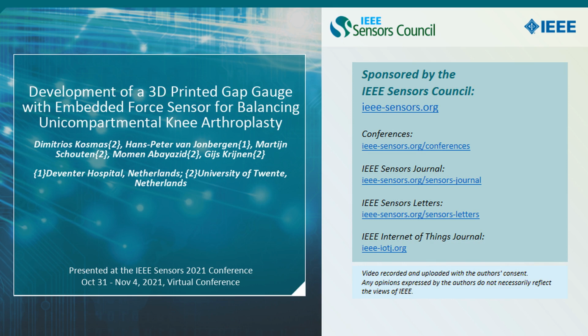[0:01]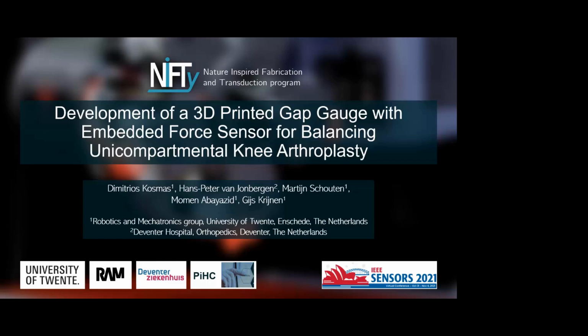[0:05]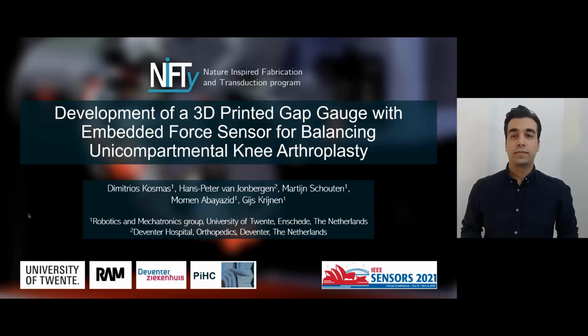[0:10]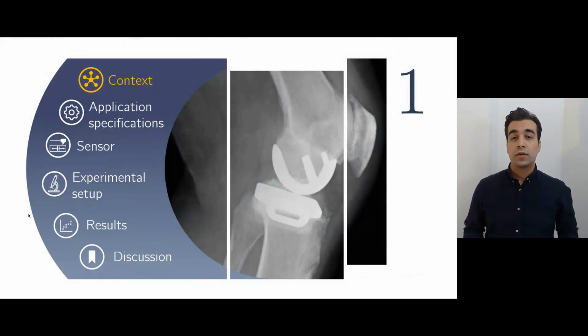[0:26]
My name is Dimitrios Kosmas, and on behalf of the Robotics and Mechatronics Group of the University of Twente, I will be sharing our work on the development of a 3D printed capacitive force sensor aimed to assist in a partial knee replacement surgery. First, we will have a brief introduction to the project.
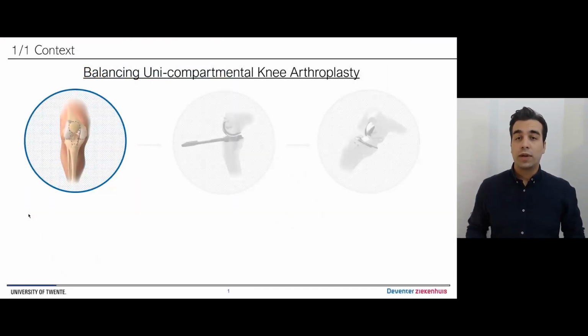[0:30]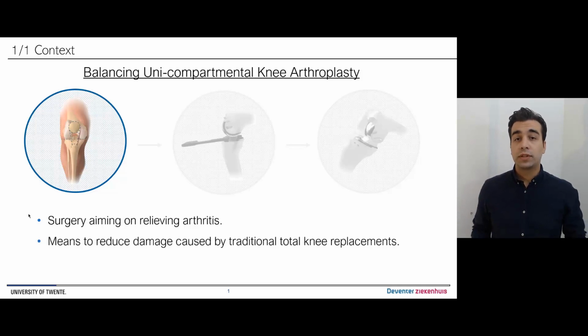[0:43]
The topic of balancing unicompartmental knee arthroplasty focuses on relieving symptoms of knee-related arthritis as an alternative to the more traditional total knee replacement. When applicable, the partial knee replacement incorporates smaller implants, which reduces the amount of bone required to be removed, subsequently minimizing the overall damage that is induced.
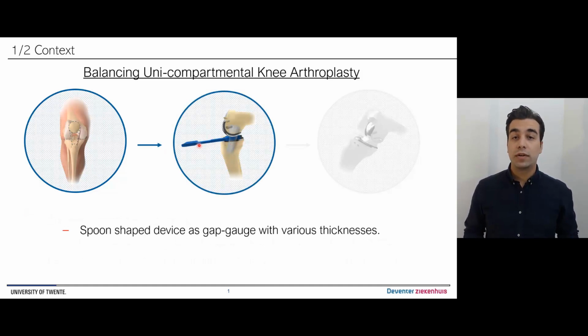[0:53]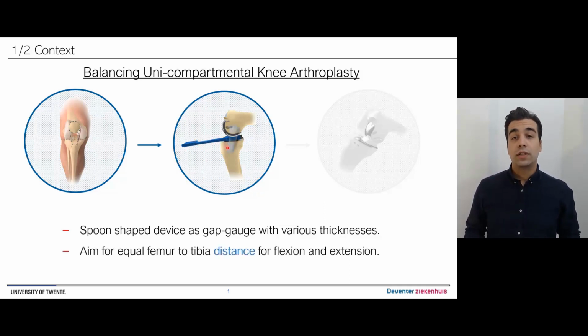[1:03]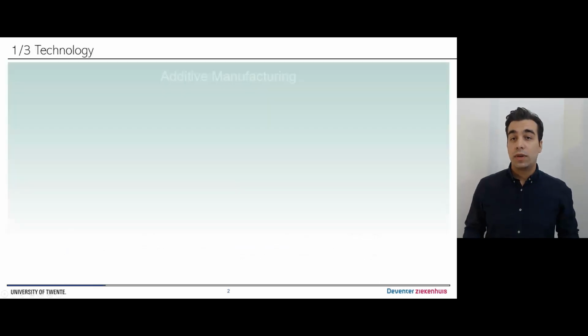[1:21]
During the surgery, the orthopedist makes use of a spoon-shaped device, referred to as the gap gauge. These gauges come in various thicknesses, as a means to address the different knee sizes. The goal during this step of the surgery is to assess the distance between the tibia and the femur bones, such that the gap is equivalent in positions flexion and extension of the unloaded knee. Equivalent distance guarantees the proper function of the polypropylene bearing implant that is located between the metallic parts of the final prosthesis.
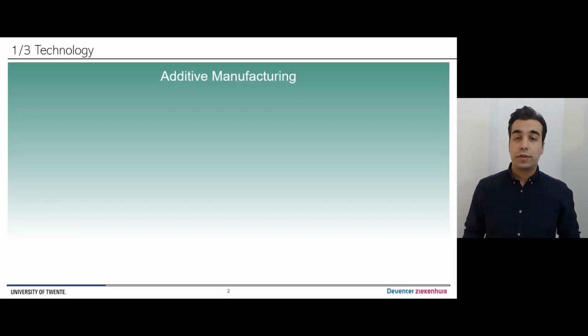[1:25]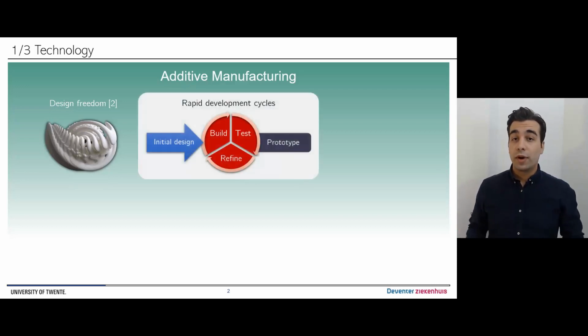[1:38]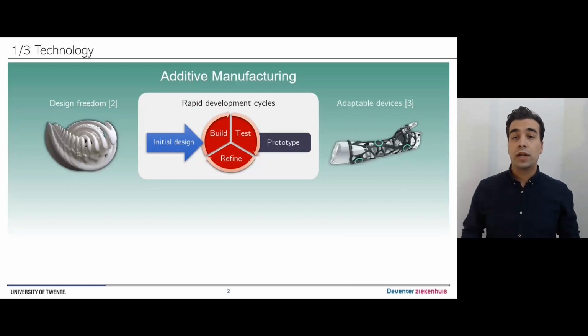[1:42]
In this work, we make use of additive manufacturing as the fabrication technology. Additive manufacturing, or 3D printing, is known for a number of key advantages, like design freedom, which enables the fabrication of complex shapes, as the one shown in this figure, representing a sculptor's recreation of a spike fossil, rapid development cycles, and, amongst others, the possibility to realize geometries with personalized features.
In particular, out of several 3D printing fabrication technologies, we make use of fused filament fabrication, which is one of the most common and accessible methods, where molten thermoplastic is pushed through a small diameter nozzle to form objects layer by layer.
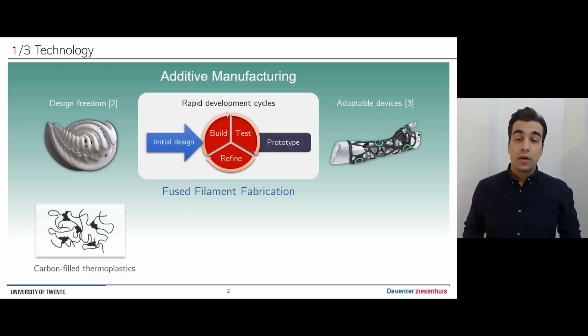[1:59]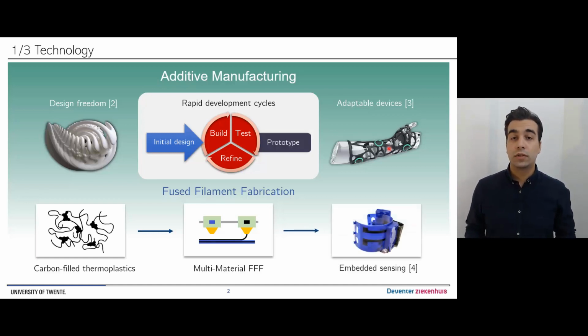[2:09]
When these thermoplastics are infused with carbon, they can exhibit conductive behavior, and combined with multi-material techniques, sensing can be integrated into almost any geometrical structure, like the one that we see in this figure, showing a 3D printed EMG armband, which was developed within our group.
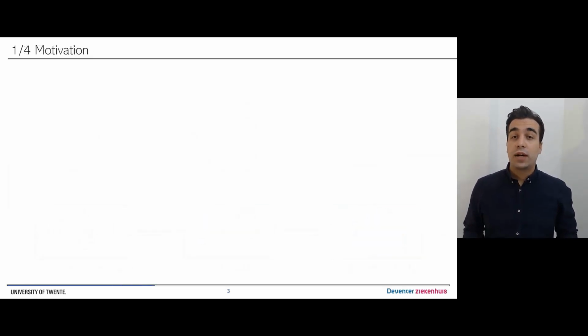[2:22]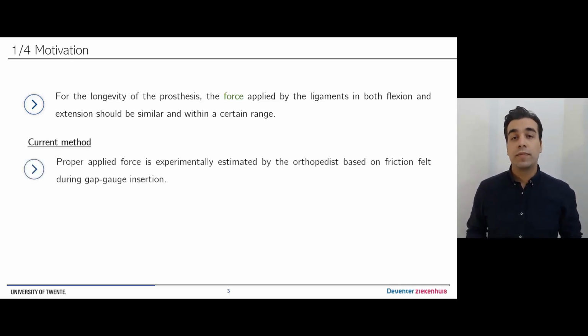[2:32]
The motivation behind this project is the hypothesis that for the longevity of the prosthesis, the applied force by the ligaments in both flexion and extension of the knee should be similar and within a certain range. Currently, this force is experimentally estimated by the surgeon based either on the felt friction during the gap gauge insertion or based on the reaction force when attempting to raise the gap gauge while in place.
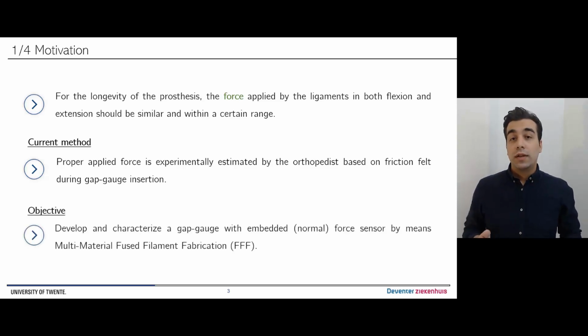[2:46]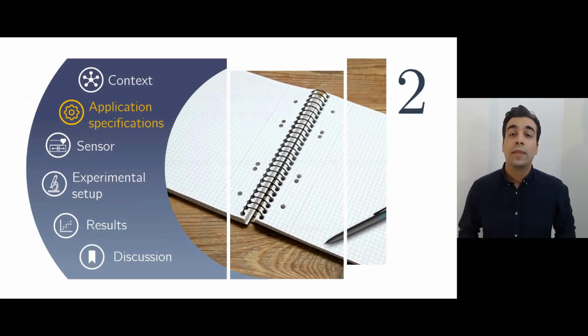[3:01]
Therefore, the objective of this work is to develop and characterize a gap gauge with embedded sensing in order to quantify the normal force applied by the ligaments, and we will do that by using multi-material fused filament fabrication technology. With the context introduced, we first have to define the application requirements.
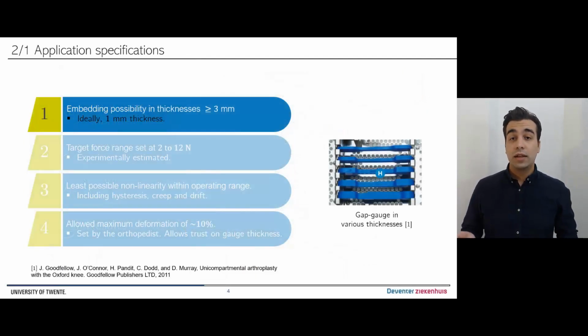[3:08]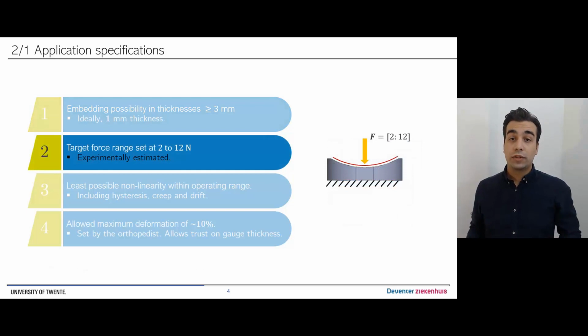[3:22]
As discussed, the gap gauges come in various thicknesses. With a proof of concept prototype in mind, we focus on thickness of 3 mm and above, as means to ease the fabrication process. Second, the target force range to be sensed is set from 2 to 12 newtons, and this is experimentally validated with the help of the surgeon and an artificial knee setup fitted with an off-the-shelf load cell.
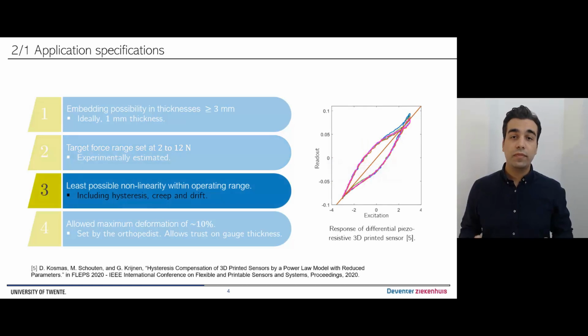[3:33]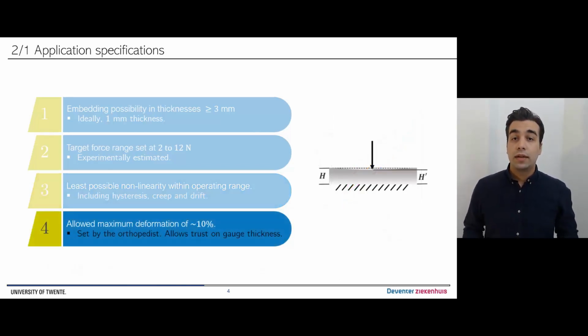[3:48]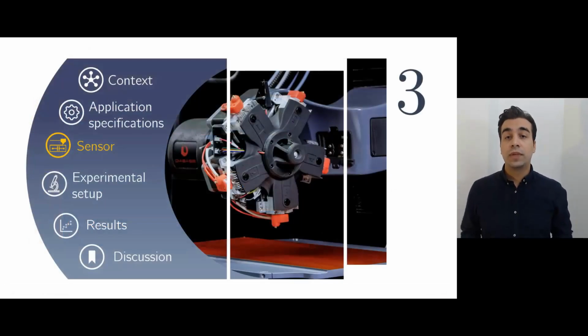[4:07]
Third, given the non-linearities exhibited by filament-based 3D printed sensors, we aim for a sensing principle and configuration that could eliminate most of the undesired effects, such as hysteresis, creep, and drift. And fourth and last, by integrating sensing into the spoon, we consequently allow a certain degree of deformation, such that a signal can be produced. In order to maintain trust on the gap gauge's thickness rating, and after dealing with the orthopedist, a maximum of 10% deformation is set as the allowed limit.
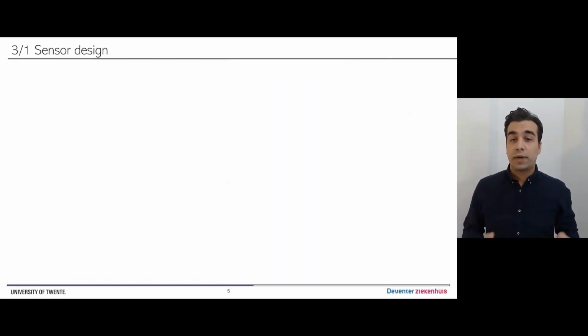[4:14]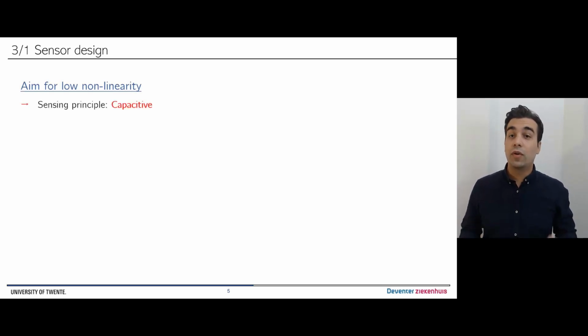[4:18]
Next, the sensor design and fabrication will be discussed. For the sensing principle, a capacitive approach is chosen in this case. Often, a piezoresistive approach is also suitable, but from the literature it is shown that filament-based piezoresistive sensors exhibit highly nonlinear response, which would violate the set specifications.
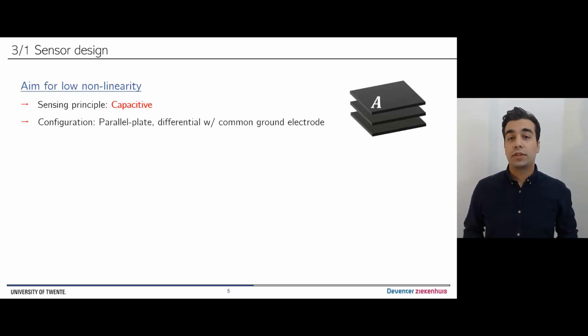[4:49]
Capacitive sensing has been shown to be less influenced by the viscoelastic properties of the polymers used, and therefore exhibits less nonlinear behavior in the response. On the other hand, capacitance readout interfaces are more complex compared to their piezoresistive counterparts. With all that in mind, a parallel plate capacitive sensor is chosen in a differential configuration with 3 plates.
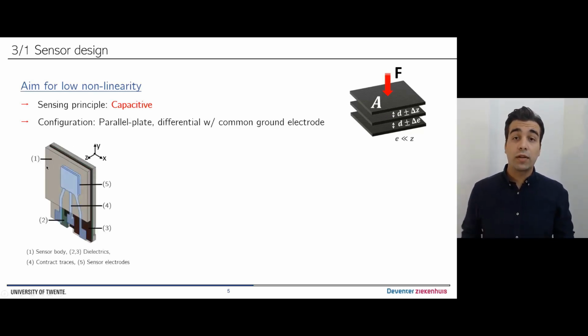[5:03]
Here, the middle electrode acts as a common ground plane. The exerted force is designed to be normal to the sensor surface, reducing the distance between the electrodes upon application. In the cut of the sensor, in the bottom left figure, the embedded structure is exposed, where we can see the sensor body, the dielectrics, the contact pads and traces, and of course the electrodes.
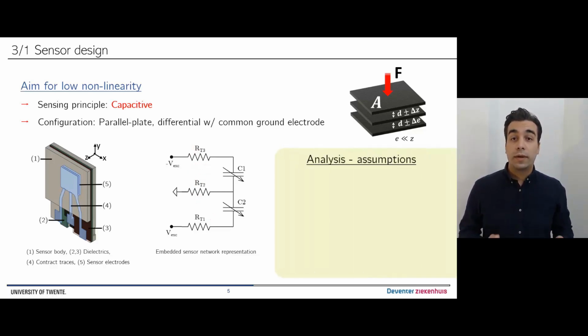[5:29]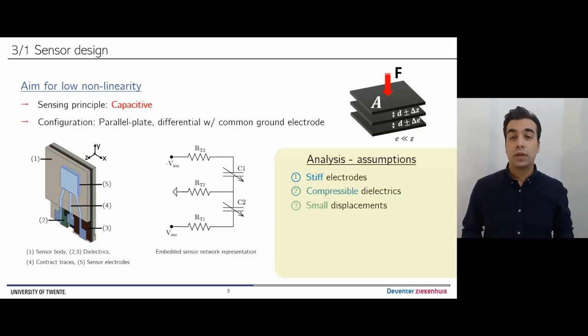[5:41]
In the figure in the middle, the network interface of the sensor is shown, with RT denoting the contact trace resistances. Last, by taking three assumptions, it's straightforward to derive an analytical description of the expected capacitance change. That is, assuming stiff electrodes, compressible dielectric, and very small displacements, where we allow ourselves to work in the linear range, the capacitance change could be expressed by the following equation.
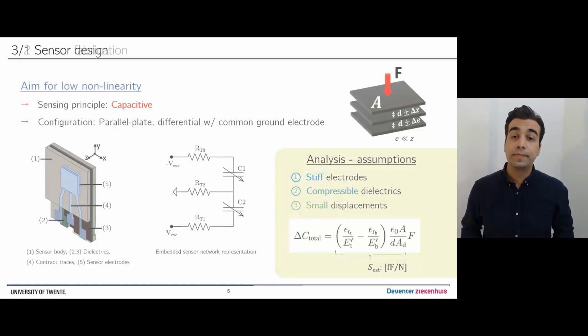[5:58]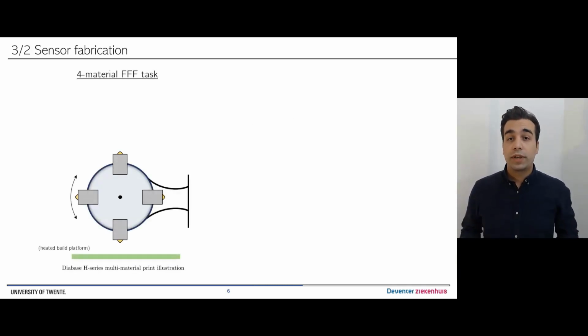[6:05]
From here, the fraction delta C over F can be seen as the sensor sensitivity expressed in femtofarads per newton, in this case, per newton. Moving on, we can discuss the sensor fabrication.
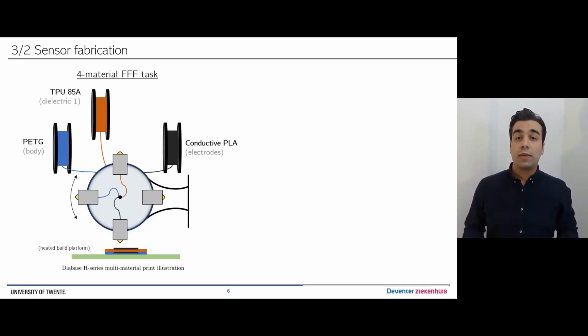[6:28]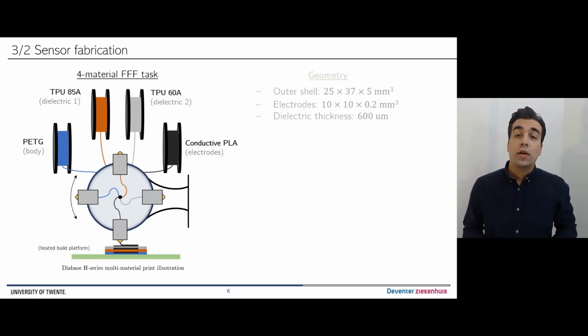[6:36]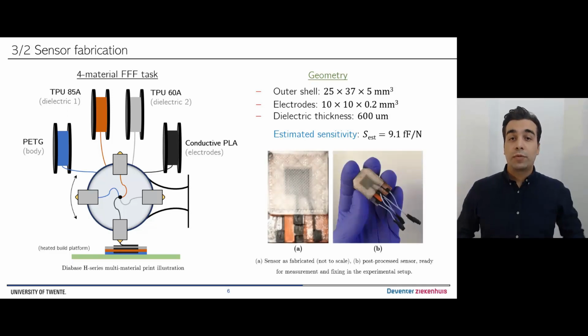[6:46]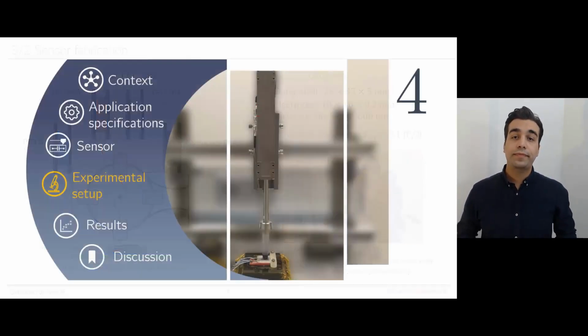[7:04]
For the prototype, the main dimensions are shown in the top right, from which the expected sensitivity can be calculated to be 9.1 femtofarads per newton. In the bottom right figure, we can see the fabricated sensor, first as it was fabricated, and in the second figure with minimal post-processing, where the readout cables are attached by melting some stranded wire into the contact pads.
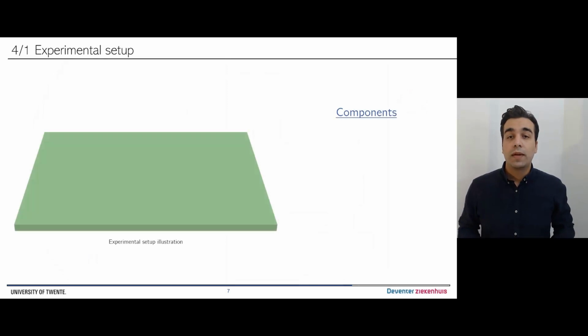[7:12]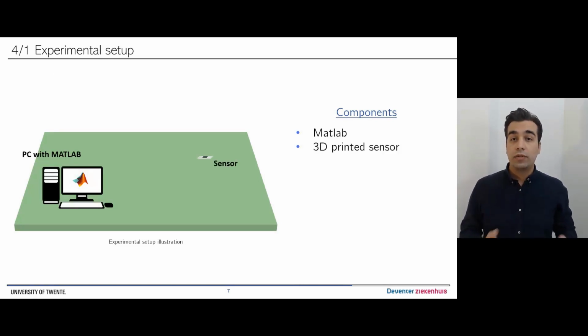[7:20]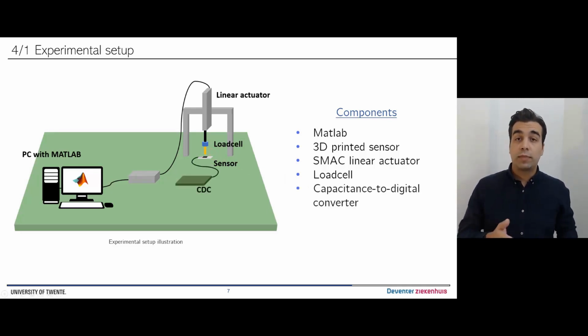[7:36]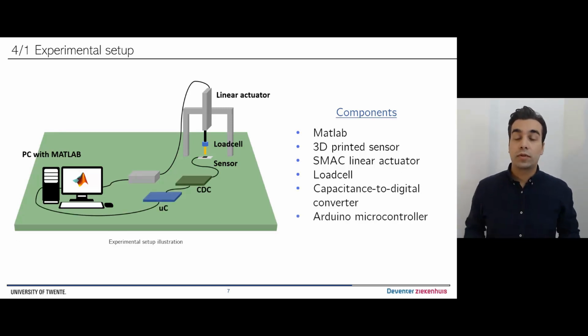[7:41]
Okay, next we'll have a short overview of the experimental setup. The main components of the experiment are a PC equipped with MATLAB software, where readout and post-processing scripts are made, and the 3D printed sensor, loaded in the normal direction with a SMAC linear actuator. On the tip of the actuator's stroke, a load cell is attached in order to more accurately measure the force. A plastic tip is then used as the contact medium with the sensor. To read out the sensor, an off-the-shelf capacitance to digital converter is employed, which in turn is interfaced with an 8-bit microcontroller, an Arduino Micro in this case, which streams data over to MATLAB.
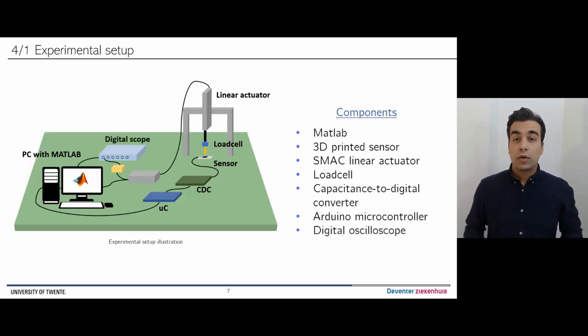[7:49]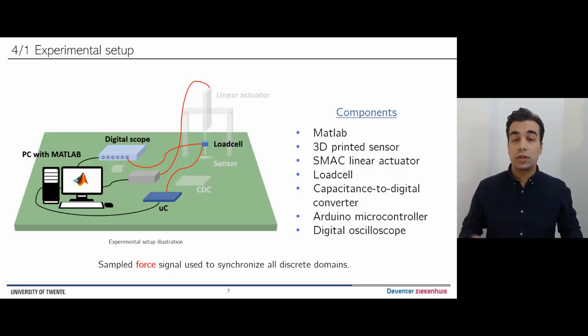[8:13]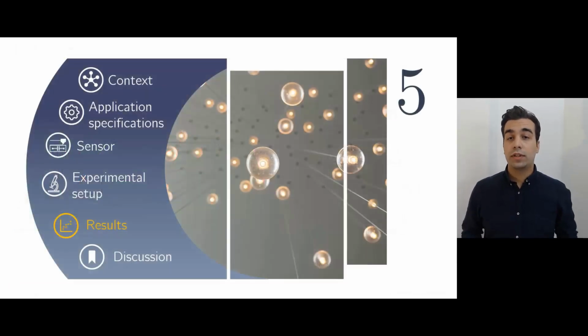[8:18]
Then the raw actuator encoder channels are extracted and read by a digital oscilloscope as a means to evaluate the stroke position. Last, the force signal is read by all measuring devices. The response of the load cell is fed both into the scope and the Arduino, and the force as returned from the SMAC controller is also read by MATLAB. During post-processing, the sampled force from all the devices is used to synchronize all signals with respect to each other. With the setup described, we can now move on to the results.
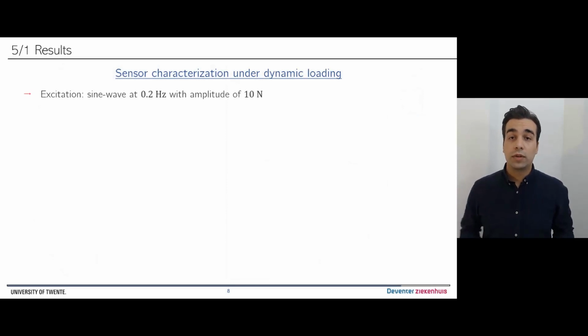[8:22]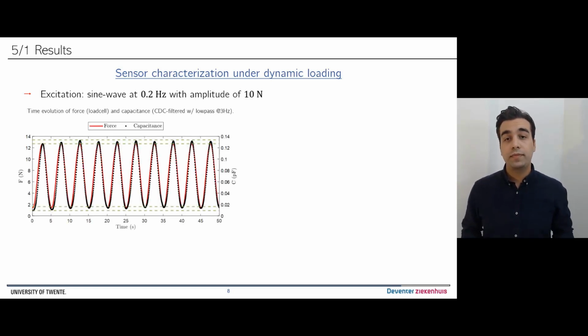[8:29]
For this work, the sensor is characterized under dynamic loading conditions. A sine wave is used at a 0.2 Hz frequency with an amplitude of 10 newtons. The first figure describes the filtered capacitance response versus time in contrast to the exerted force input. At first sight, we see a satisfactory follow of the input, although the output response is varying in an unpredictable manner within a certain interval. From this data, the measured sensitivity is found to be 9.5 femtofarads per newton, which falls quite close to the estimated one of 9.1 femtofarads per newton.
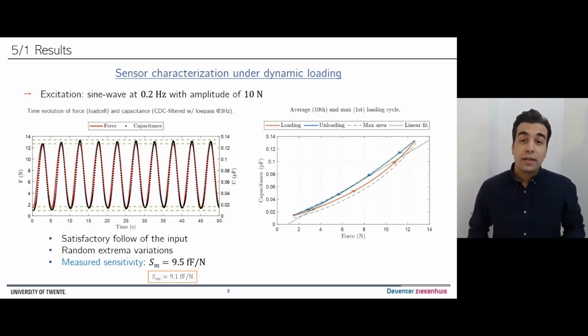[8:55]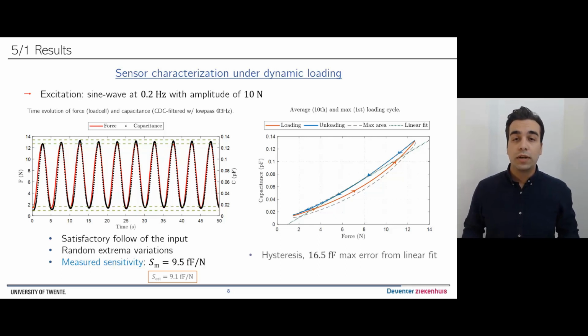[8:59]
The figure at the right shows the input-output relationship of the cyclic loading, clearly exposing the hysteresis of the system. Here, a max error of 16.5 femtofarads from a linear fit shows a significant drop in accuracy when continuous measurements are concerned.
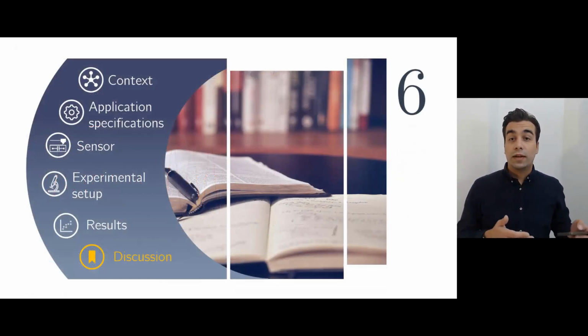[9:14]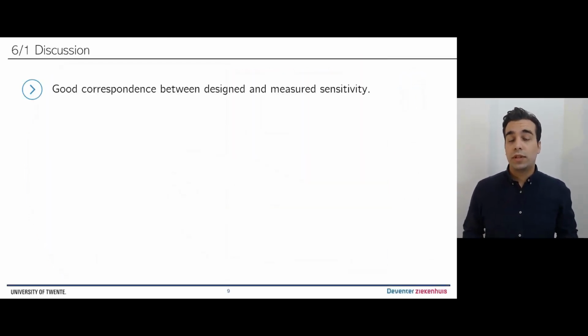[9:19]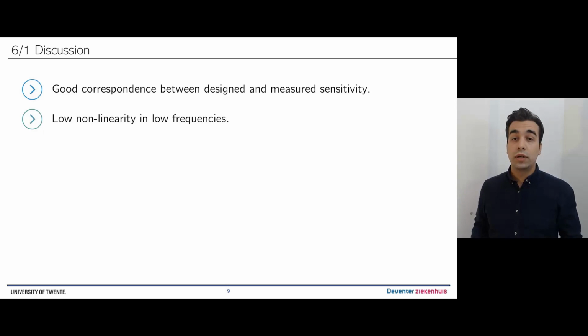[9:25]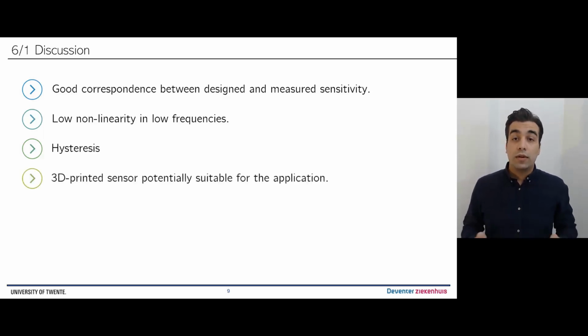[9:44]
Now we can conclude with a short discussion. First, we saw a good correspondence between the design and measured sensitivity. Second, for low frequencies below 0.2 Hz, and by focusing on the loading part, the sensor exhibits relatively low non-linearity when compared with other filament-based approaches from the literature. Third, hysteresis is still present and significantly reduces the sensor performance. So if repetitive measurements are of interest, then methods of hysteresis compensation are advised. Fourth, overall, given the application specifications, the prototype sensor seems to be potentially suitable for the task.
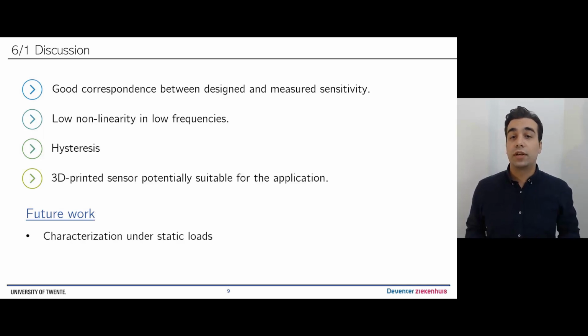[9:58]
Towards future work, we will focus on application-specific characterization by means of testing under static loading conditions, investigating the effects of embedded active shielding, as well as examining possible sterilization methods, compatible with filament fabricated devices, of course.